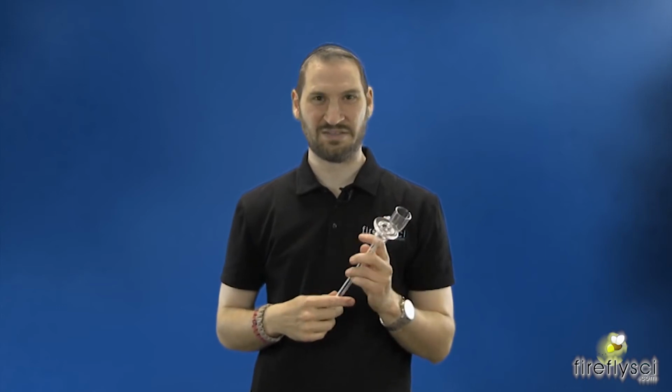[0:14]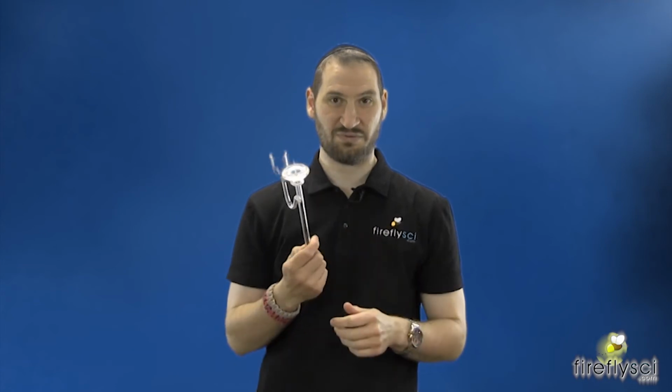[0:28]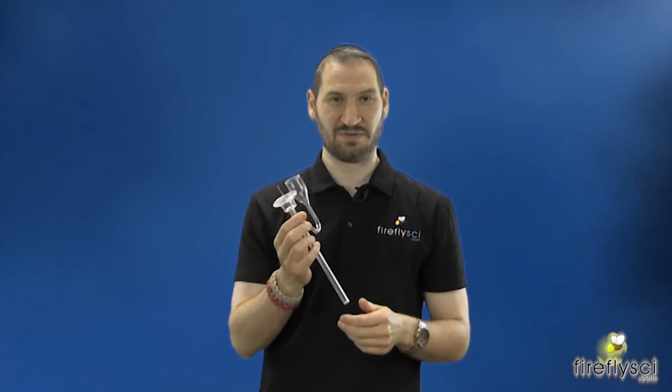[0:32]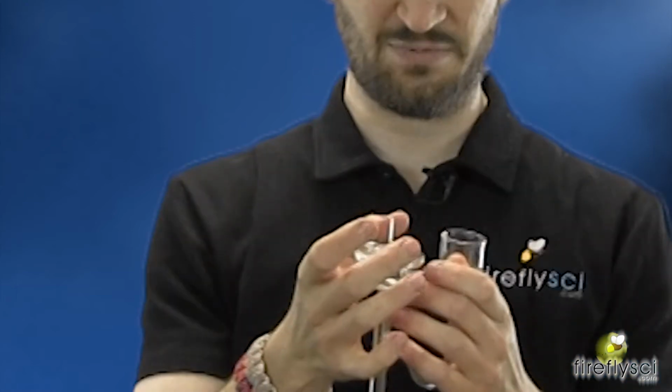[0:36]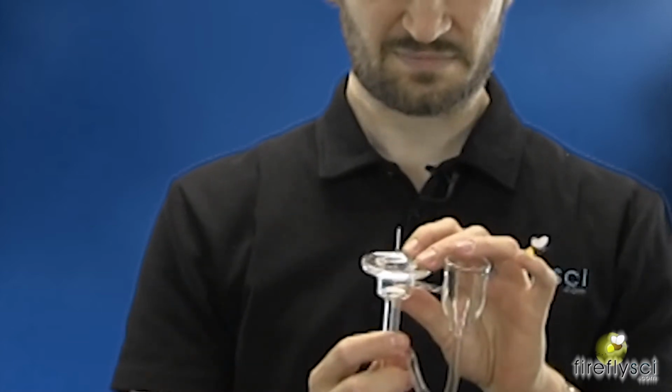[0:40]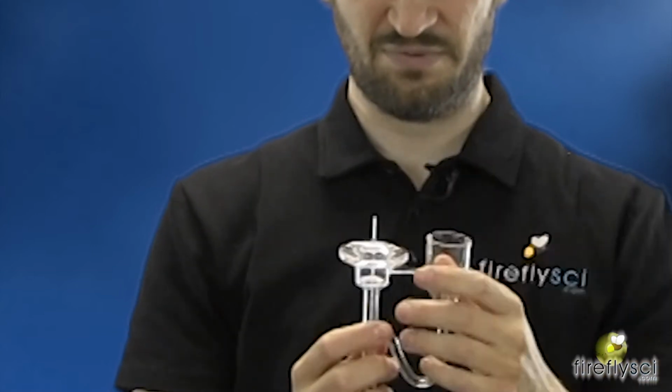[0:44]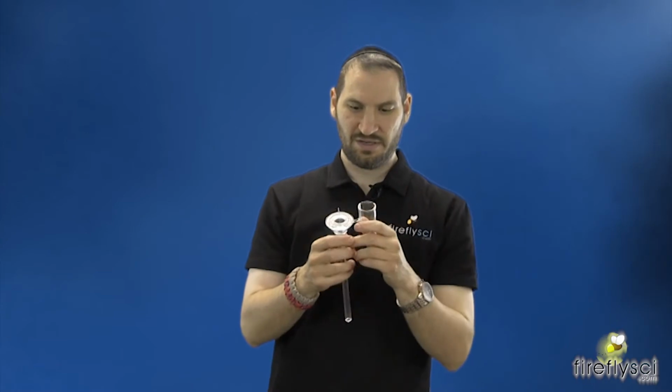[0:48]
And yeah, so he made us this, we worked together to make this prototype cell washer. And again, we designed this for large lightpath cuvettes. You could see some of the differences here is that we have this huge base now. In the current design, I should say, we have a small little cup here, but we enlarged this base and made it much larger, much bigger.
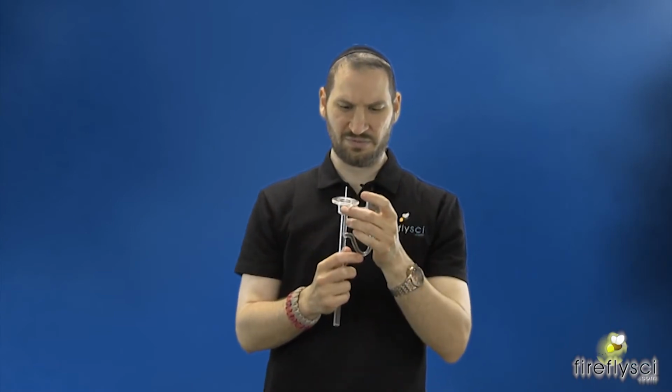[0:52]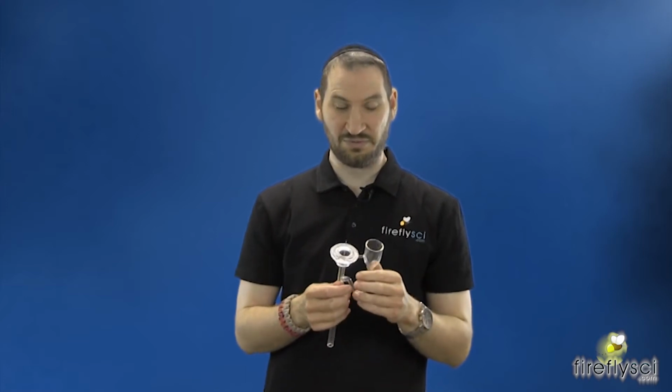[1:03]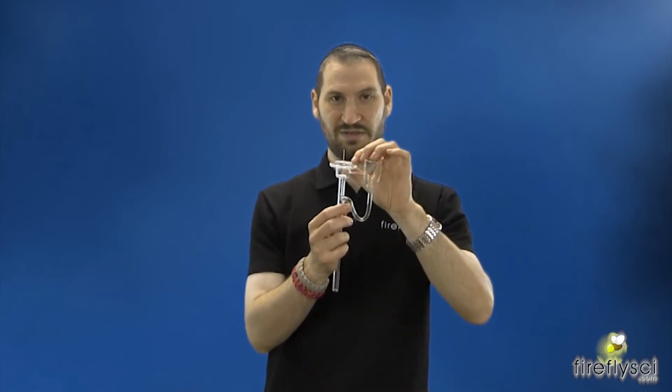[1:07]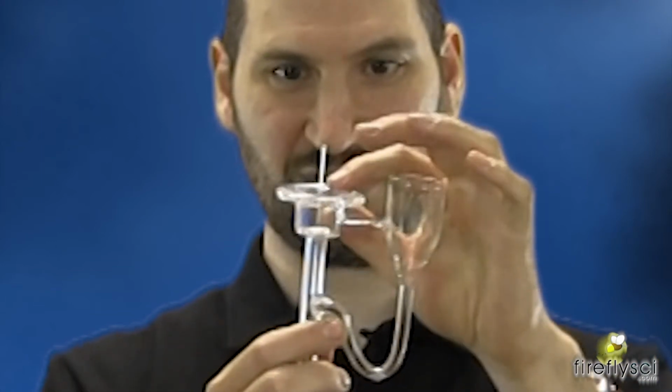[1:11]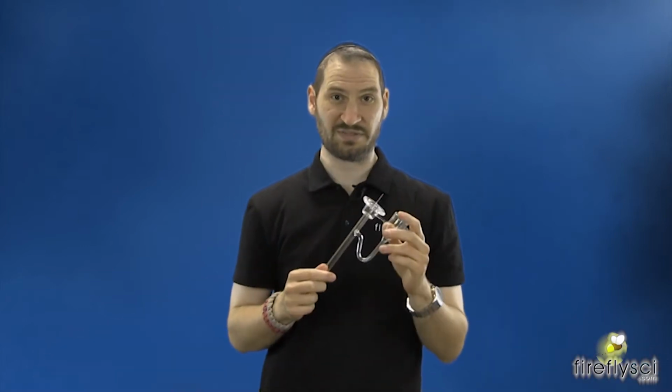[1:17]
And essentially, not only do we want this to wash large cuvettes, but we also like to wash our smaller lightpath cuvettes as well. Our goal, of course, is to wash those tiny 1 millimeter lightpath cuvettes. And what we did to accommodate that is we put a smaller tubulation here in the middle. I'm not sure if you could see that, but right here, this tube is actually smaller diameter than what we're currently using. So this again is a prototype. It's the first one that we've designed.
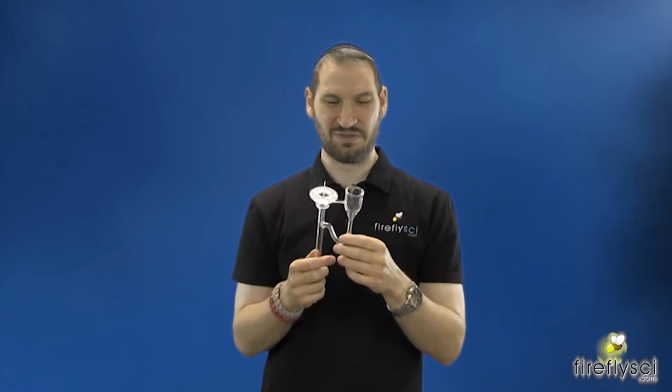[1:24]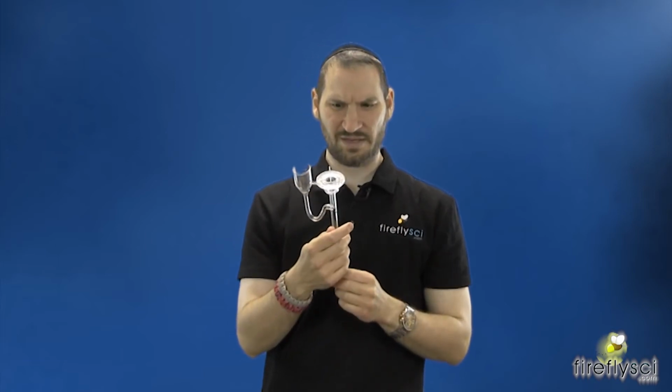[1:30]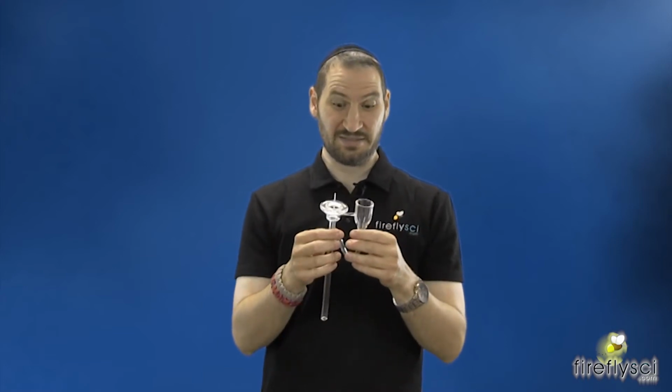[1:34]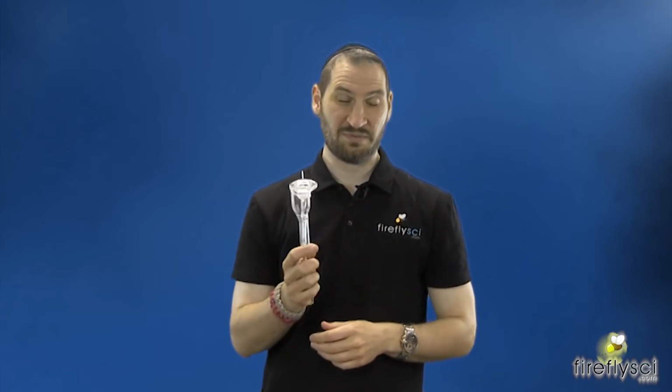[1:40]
And we're going to let you in a little bit behind the scenes here. I want to show you guys how we develop products from start to finish. And again, this is just the first run of this. And I'm going to be testing it today. And that's why I'm showing it to you. To see, does it work? How well does it work? Where can we make changes? Where can we make improvements? And yeah, so I'm going to get it hooked up, set up, and let's see how it goes.
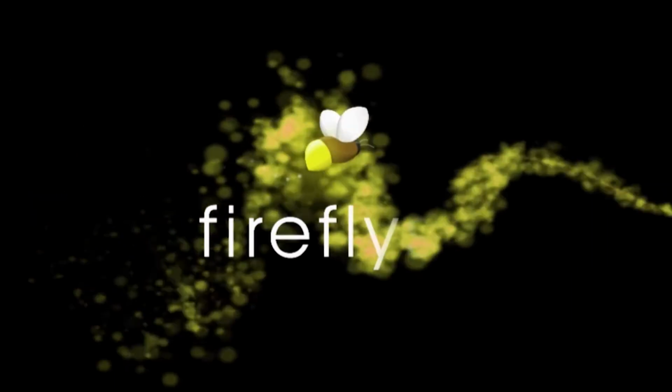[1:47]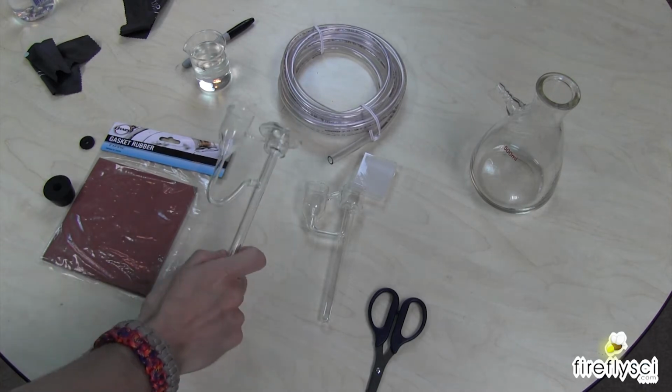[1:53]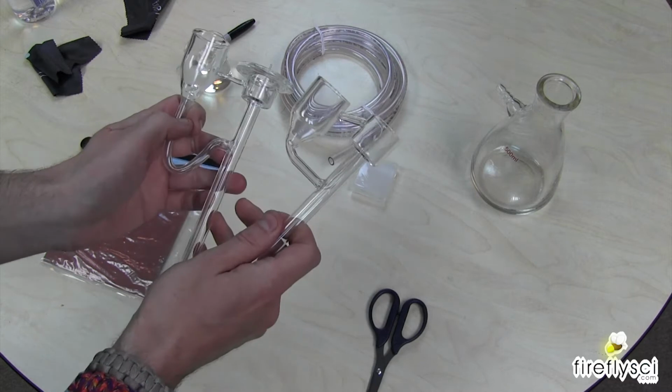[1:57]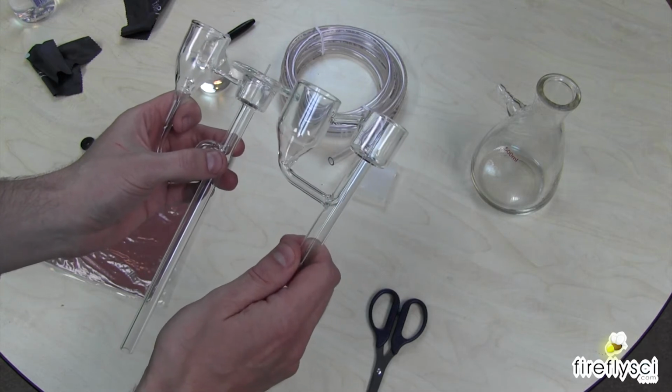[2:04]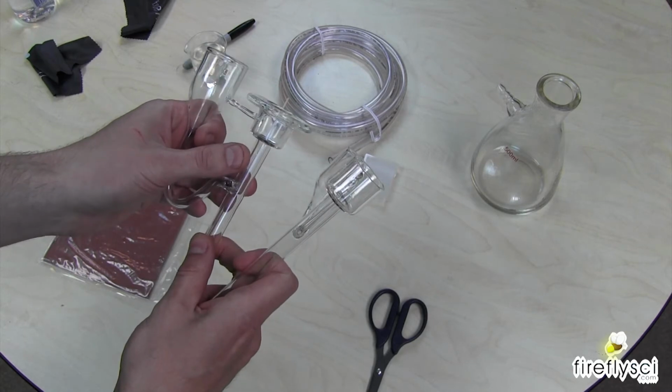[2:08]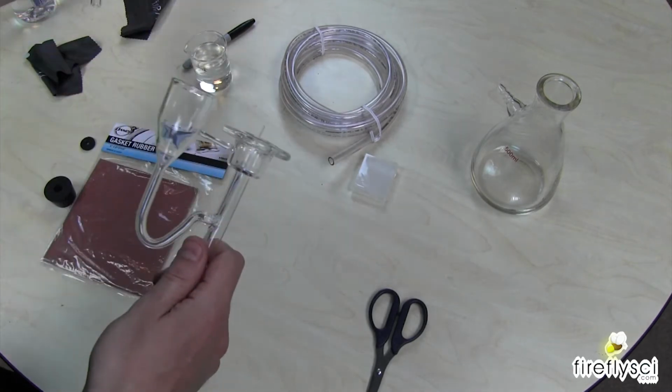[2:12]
Alrighty, so here we are. The first thing I want to do is set up the new cuvette washer here. And I brought out an old one as well so we can compare the two. This is the one that currently washes 10 millimeter cuvettes, and this is the experimental prototype for the larger lightpath cuvettes. So anyway, let's put that off to the side.
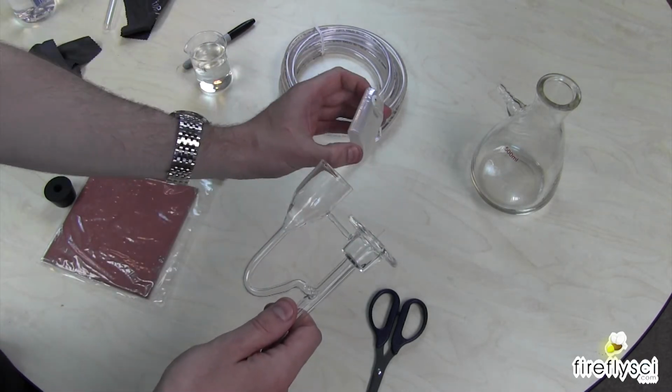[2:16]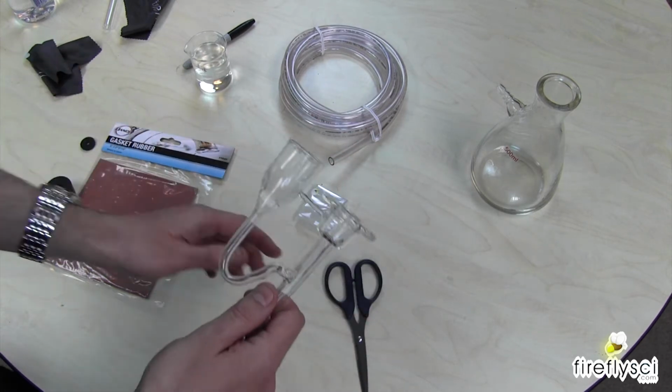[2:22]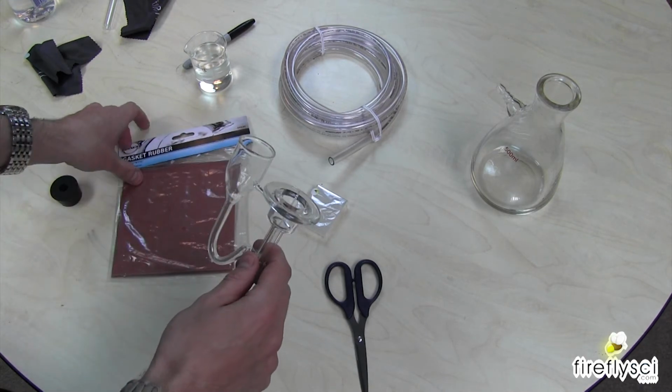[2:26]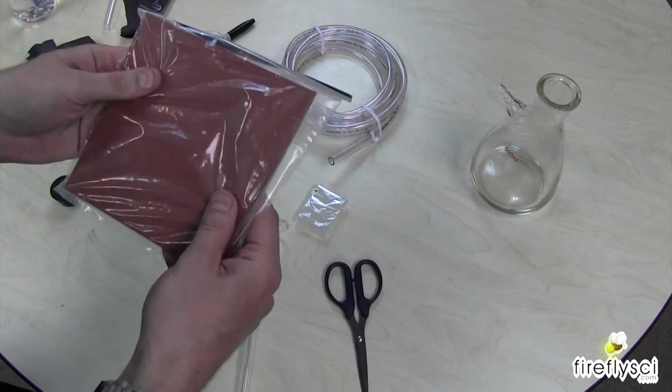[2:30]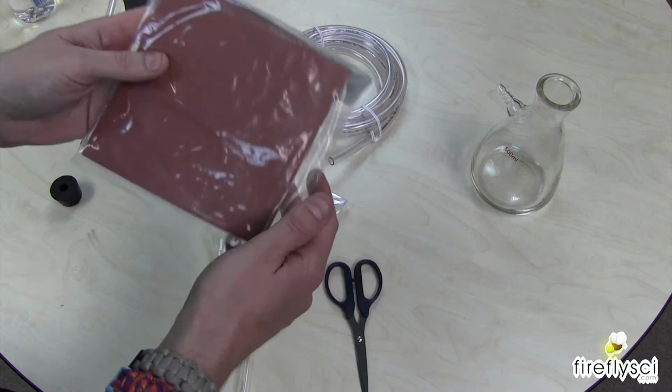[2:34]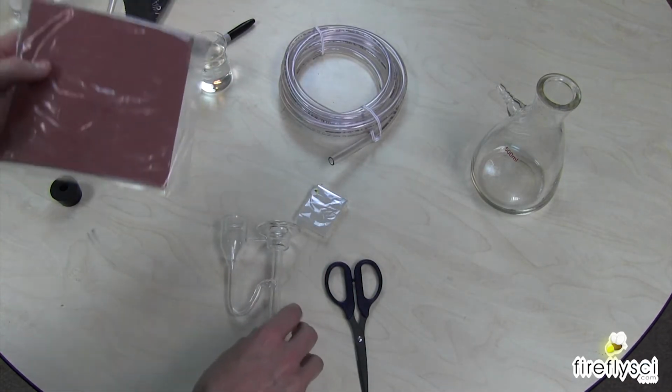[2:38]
So I have a 50 millimeter cuvette, which is going to be our test cuvette for this experiment. I didn't look for a gasket for this yet, but what I did is I was at Home Depot this morning and I picked up this big sheet of rubber here. So I am just going to cut this into a nice round shape that's going to fit right on the top of this here.
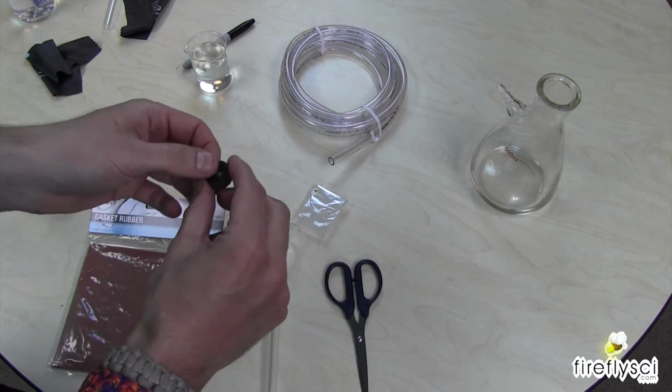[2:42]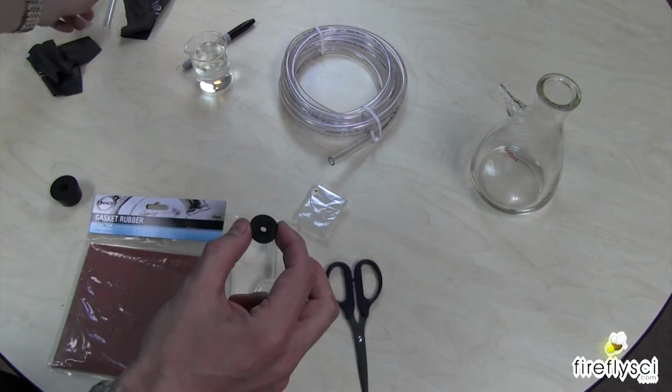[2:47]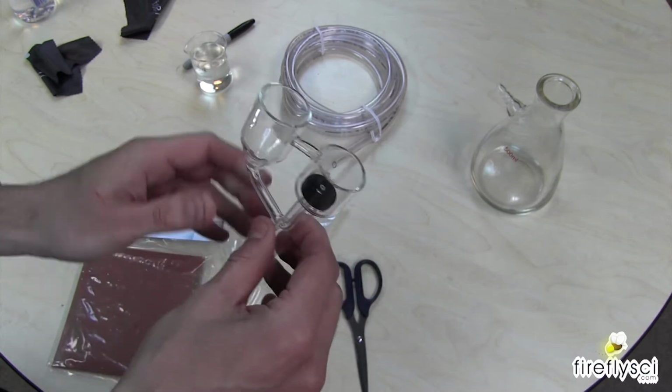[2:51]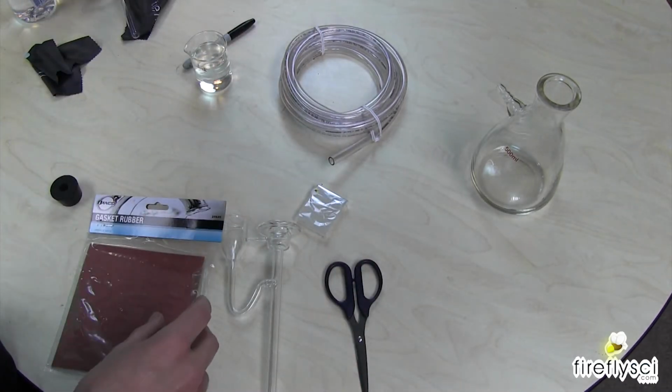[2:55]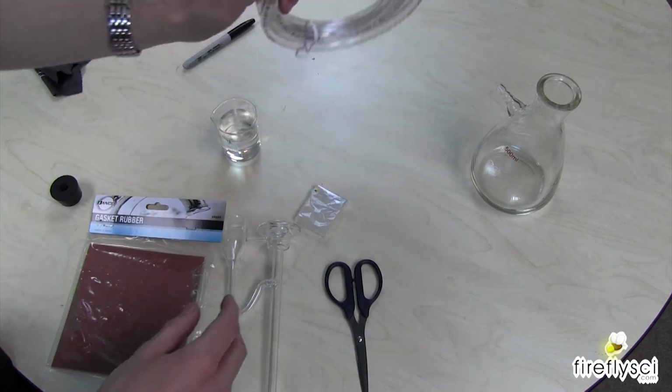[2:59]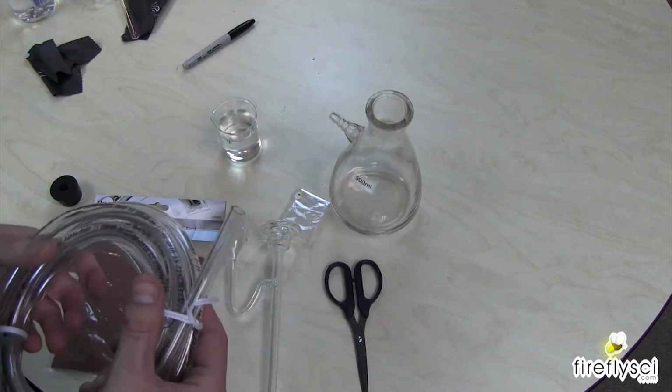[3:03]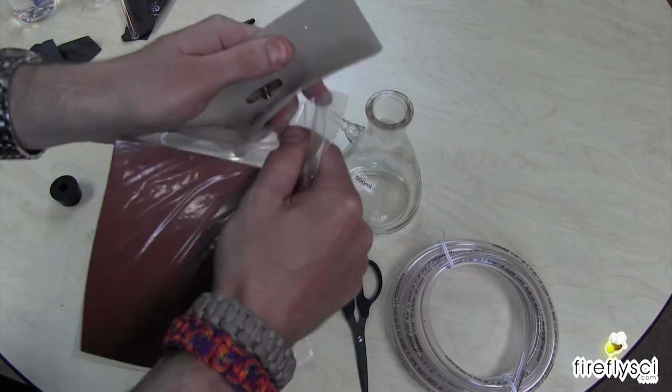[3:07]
The stopper for the other one looks like this. It's the small little disc here. And again, everyone's seeing that, it just sits right on top. Oh, there we go. Sits right on top just like that. Okay, fine. I have some distilled water here, the tubing for the pump, and the vacuum flask is hanging out over there. All right, good.
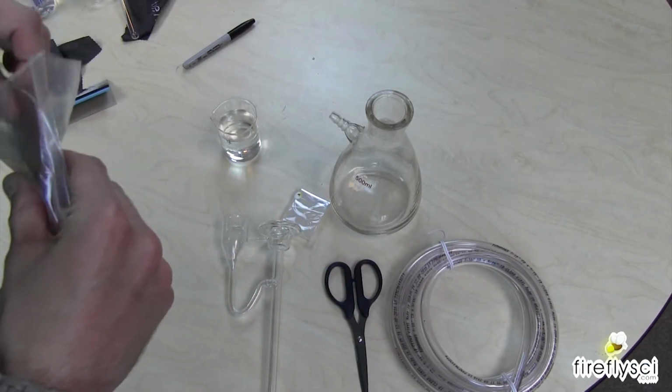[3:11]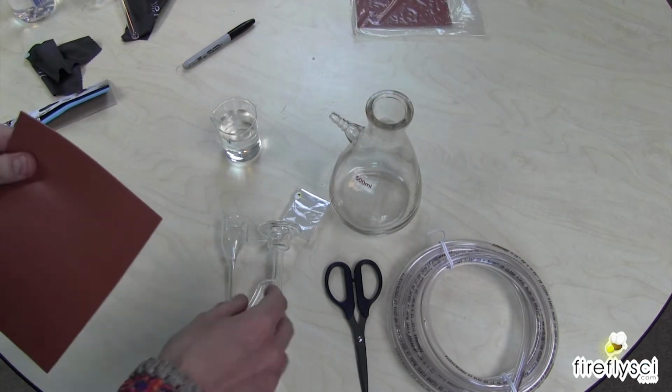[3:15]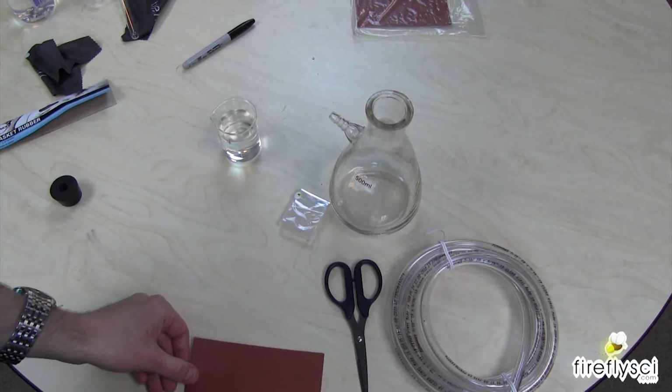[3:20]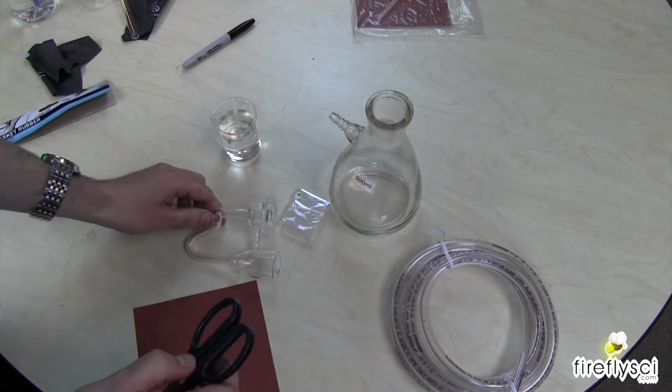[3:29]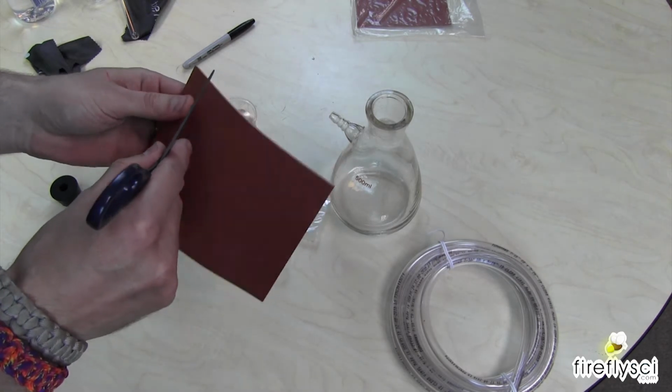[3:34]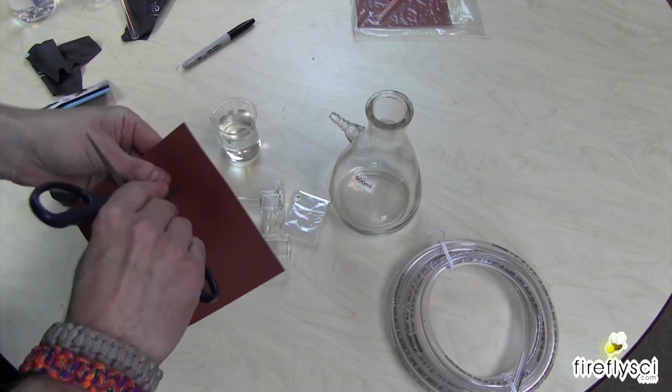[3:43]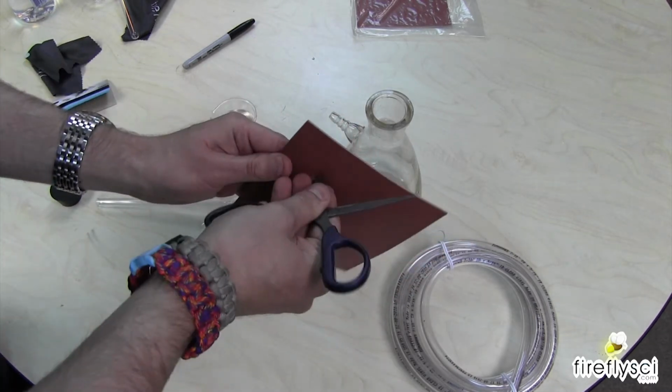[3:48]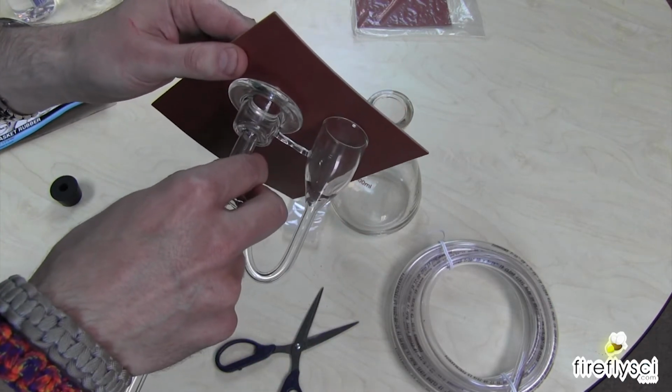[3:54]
So let's go ahead and start with making our gasket. All right, so the question is, how am I going to pull this off now? I want to be able to make a hole in this. So let's see. I think the first thing I'm going to do is poke a hole here somewhere in this region and hope that this will be able to let me trace out the design here. Okay, cool. Nice. Get out of the way, rubber.
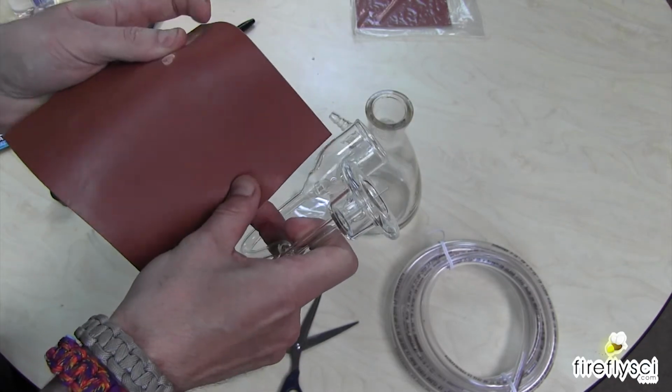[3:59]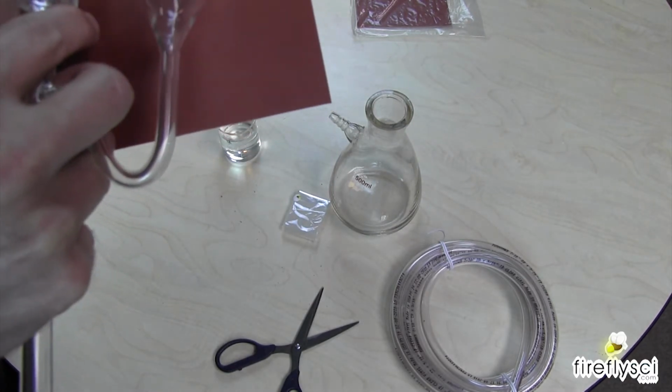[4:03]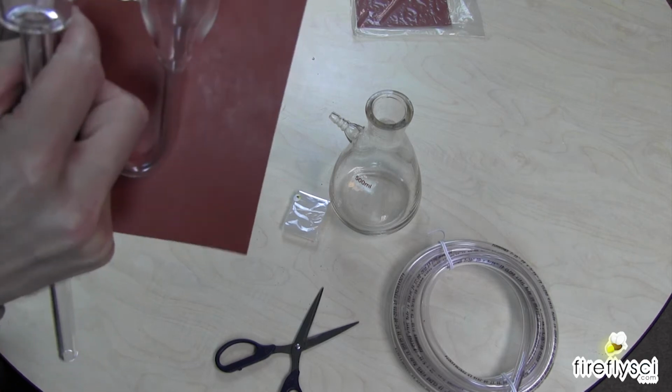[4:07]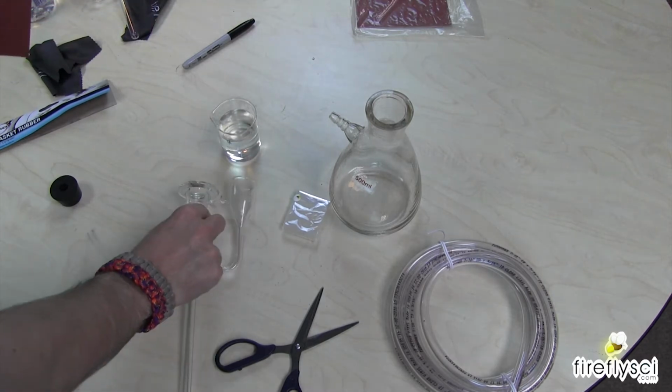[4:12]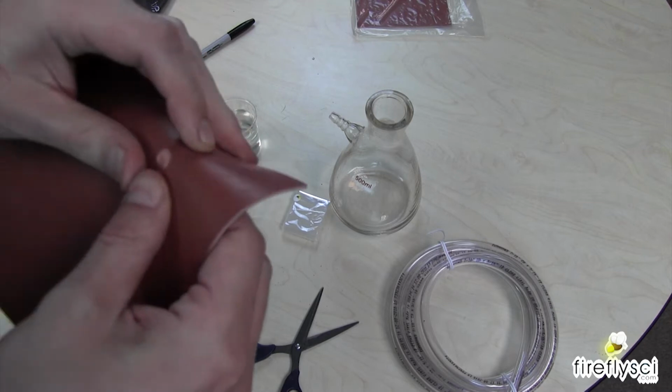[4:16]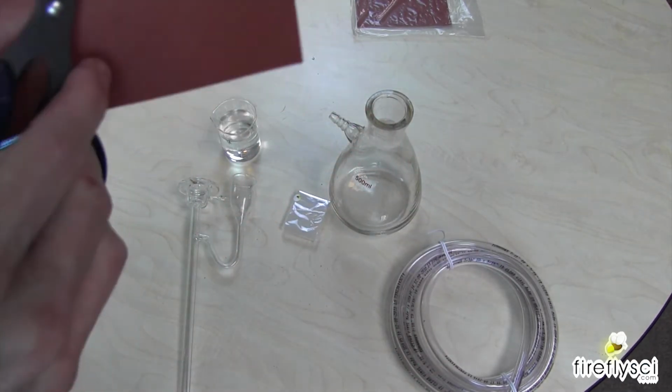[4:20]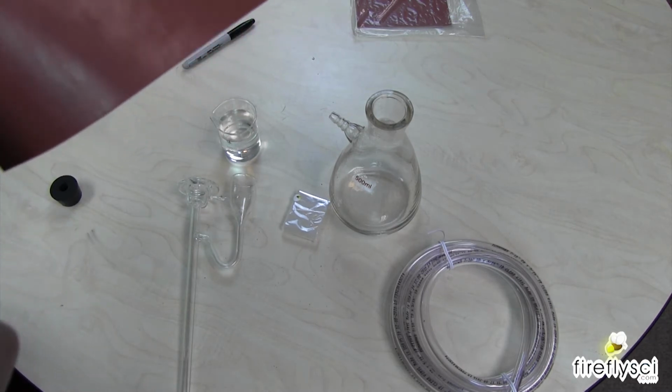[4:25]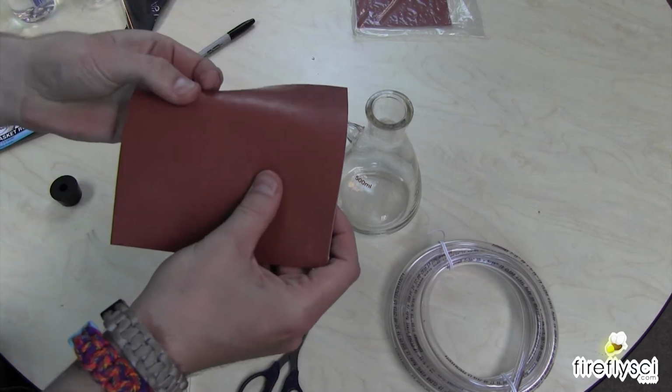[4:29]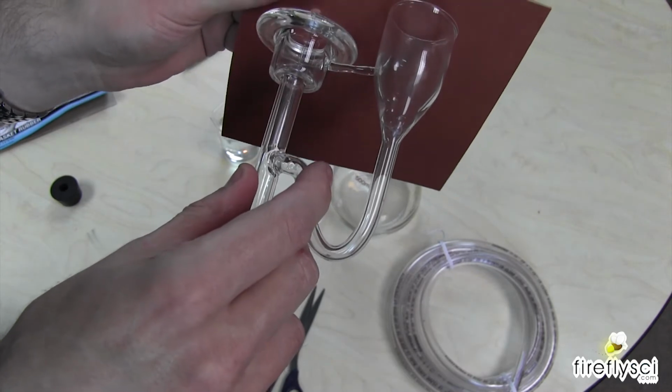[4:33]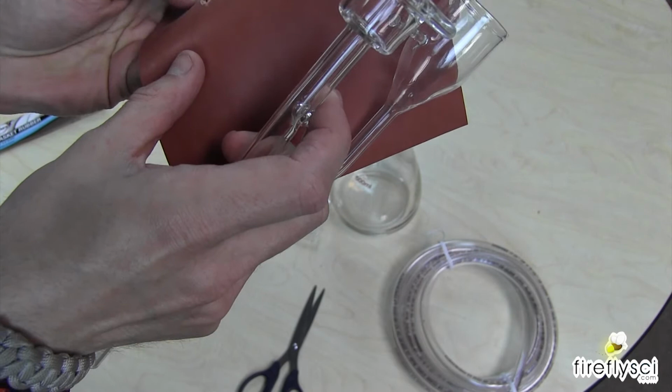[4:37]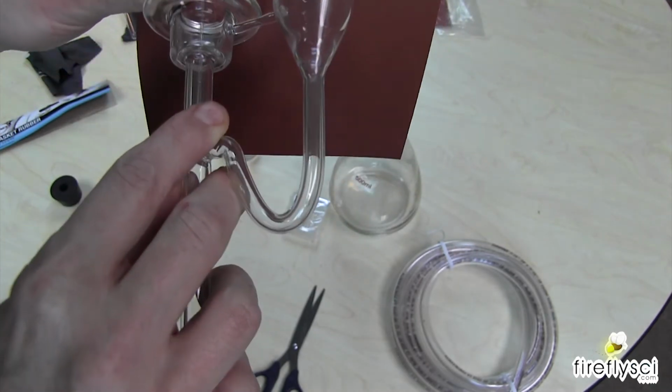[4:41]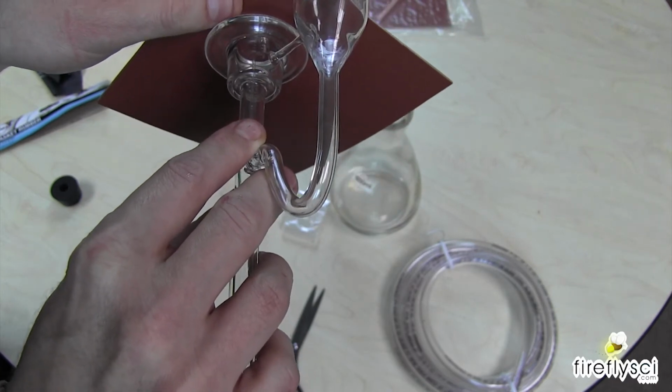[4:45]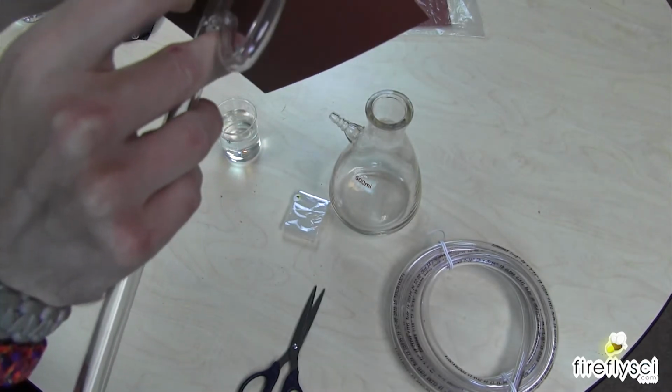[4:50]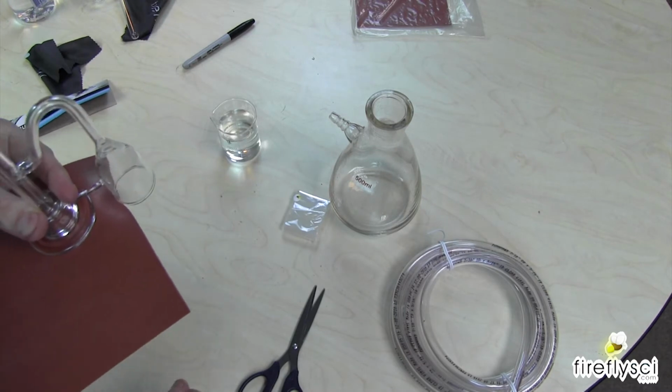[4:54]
Okay, now that I have a little bit of the rubber removed, I'm just going to pop this through this little hole I made here. Trying oh so carefully not to snap off this very delicate tube. All right, nice, got it. All right, so I'm just going to flip this over, trace this, cut this, and then we will be in business. Where's my marker?
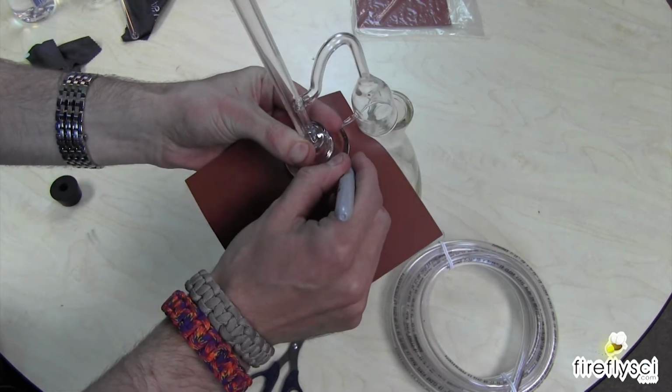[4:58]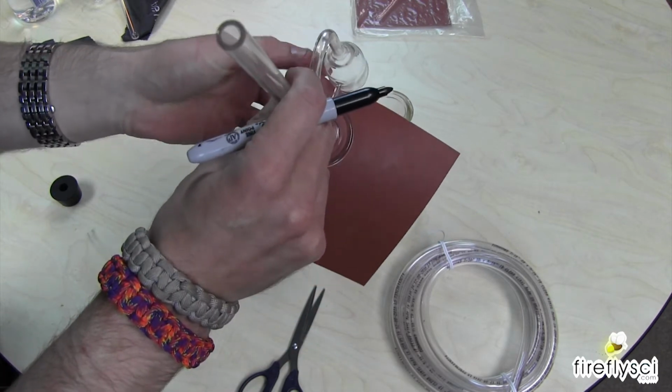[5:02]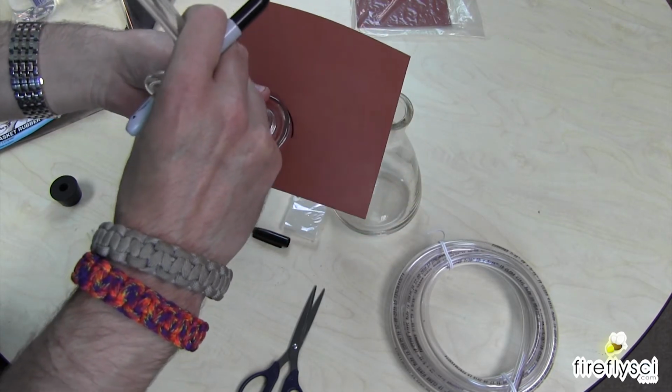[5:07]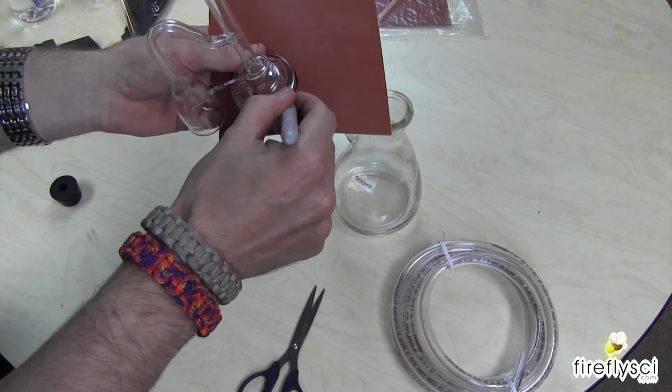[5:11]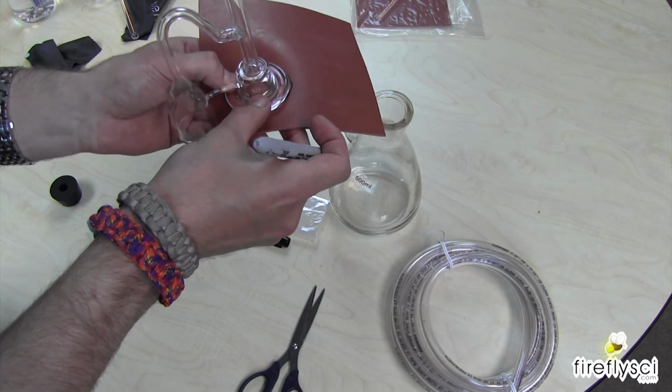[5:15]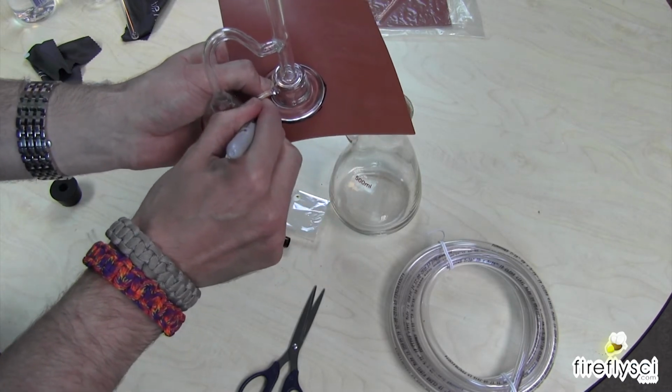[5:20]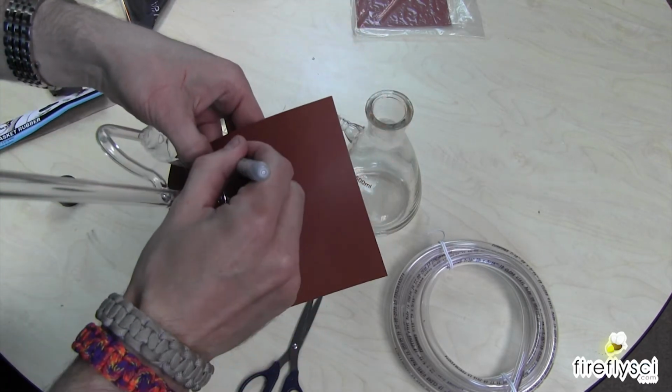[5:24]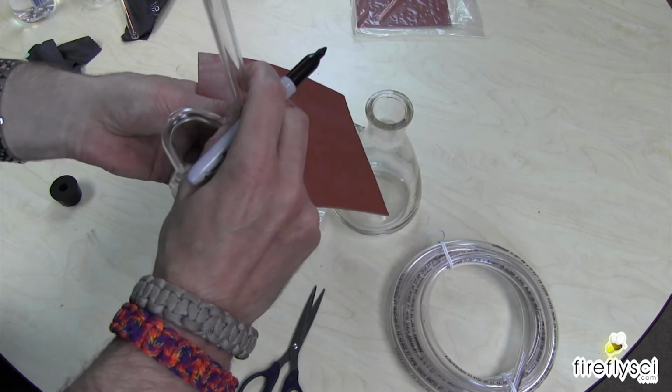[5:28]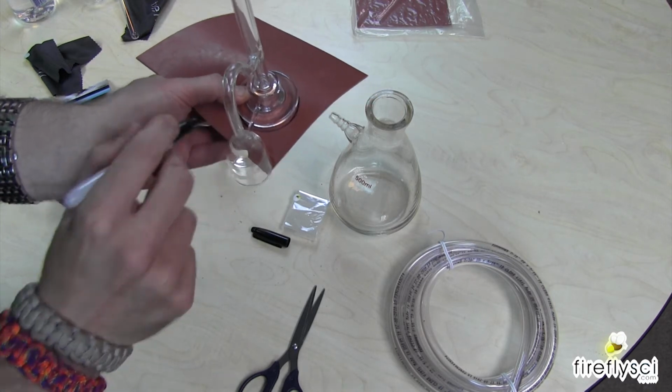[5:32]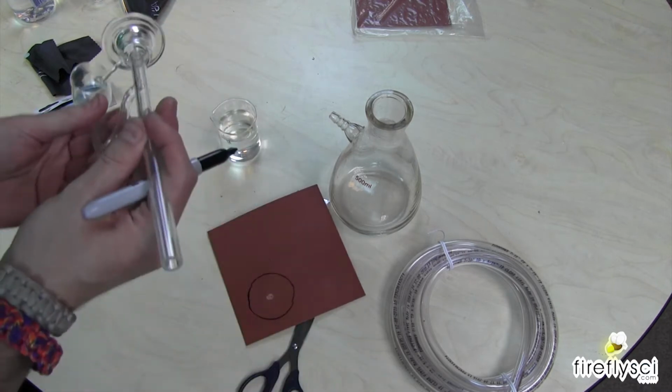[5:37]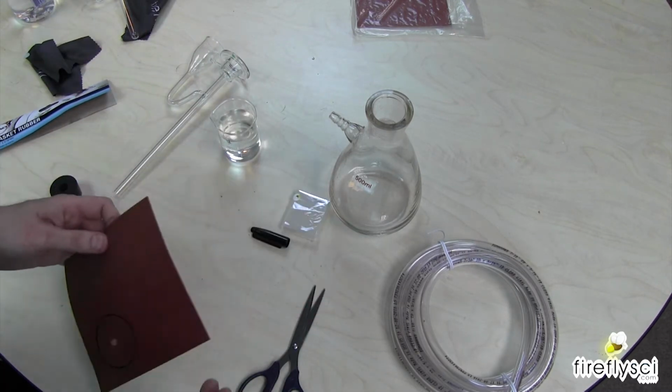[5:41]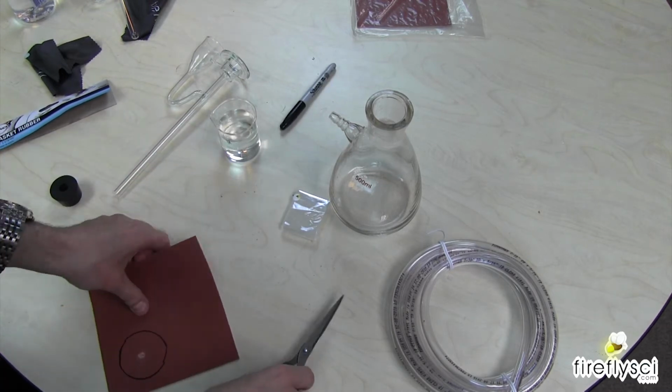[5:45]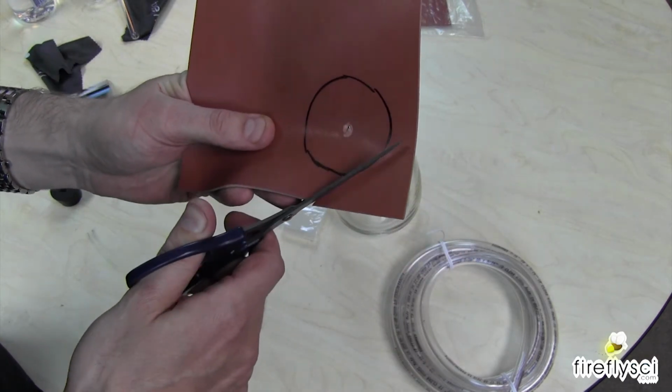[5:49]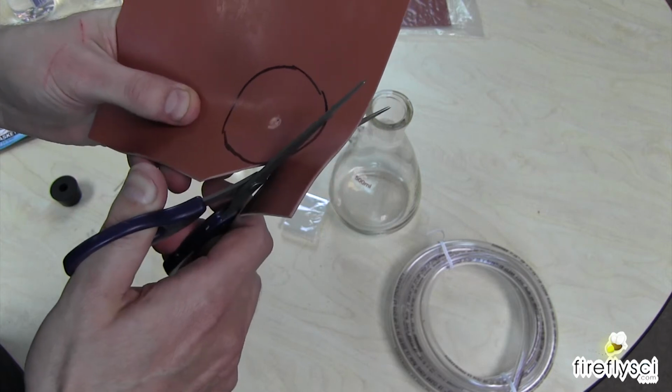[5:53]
Again, I'm not looking to make this into a masterpiece, just something that will work. There we go. Okay, fine. Boom. All right, it's not great, but you know what? It'll do. Where did I put the cap for that? There we go. Always helps to keep your tools in some kind of order so you can find them when you need them. All right, so I'm just going to go ahead and cut out this circle. Yes, I'm wasting some of this material, but there's nothing I can do about it right now.
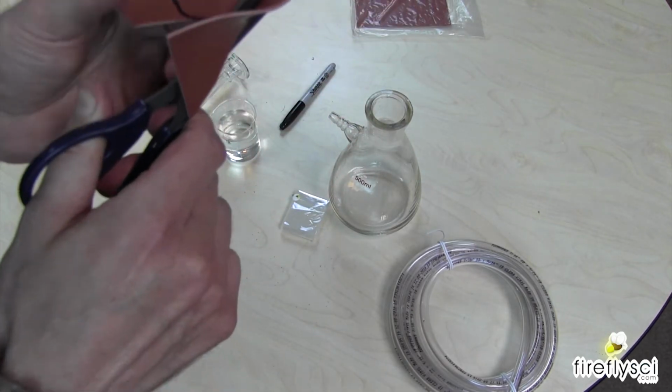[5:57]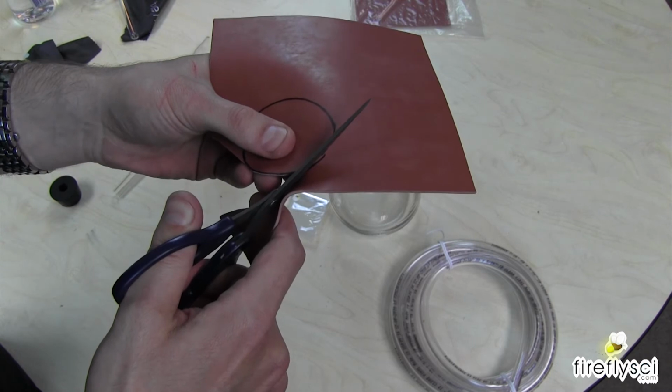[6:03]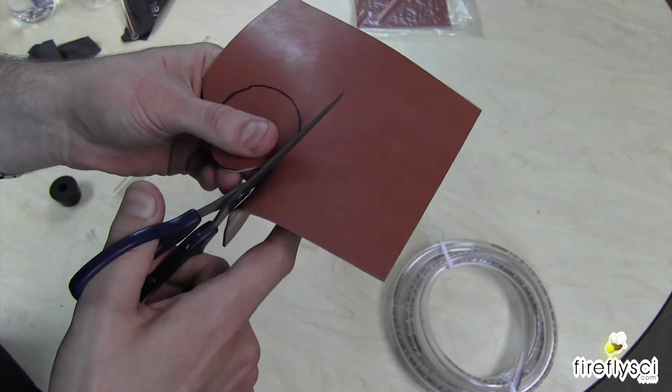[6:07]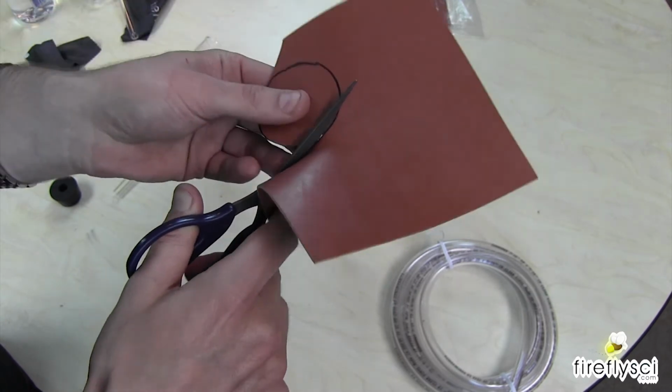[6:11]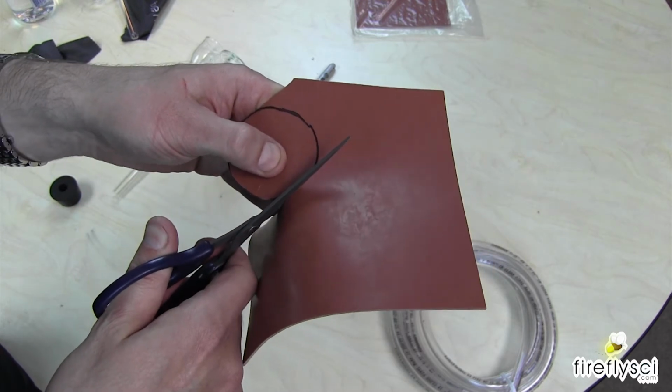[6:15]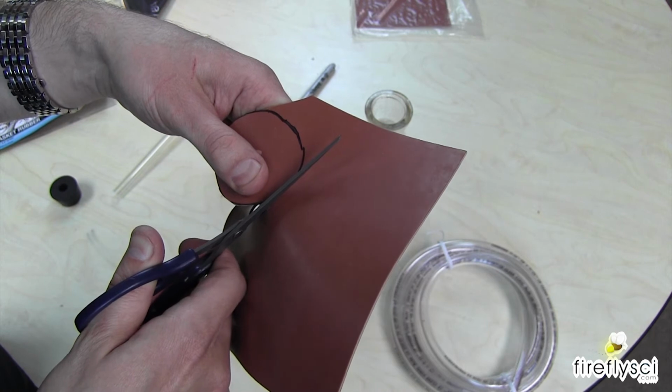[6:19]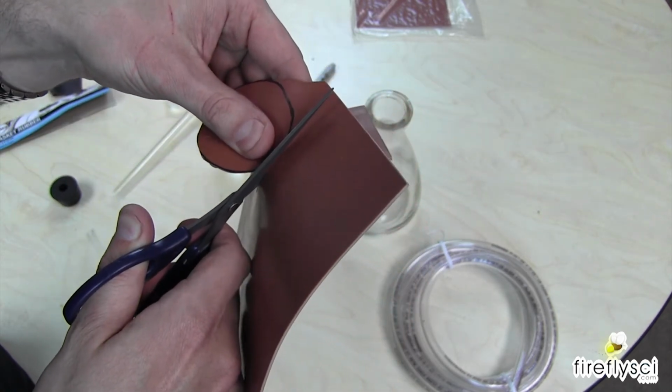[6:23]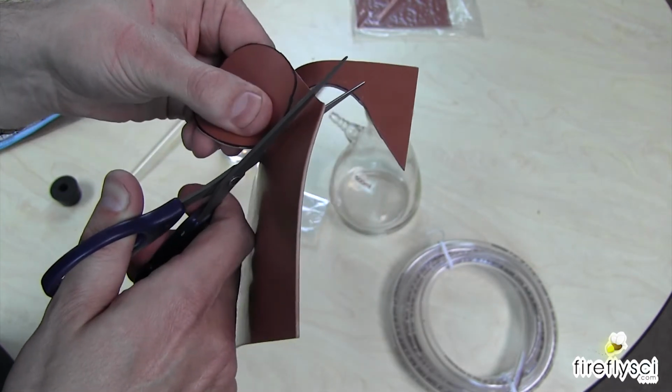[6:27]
Love cutting out stuff. It reminds me of when I was a kid. I always got to cut on the line, right? I'm doing a really crappy job right now doing this, but you know, just for demo and whatever.
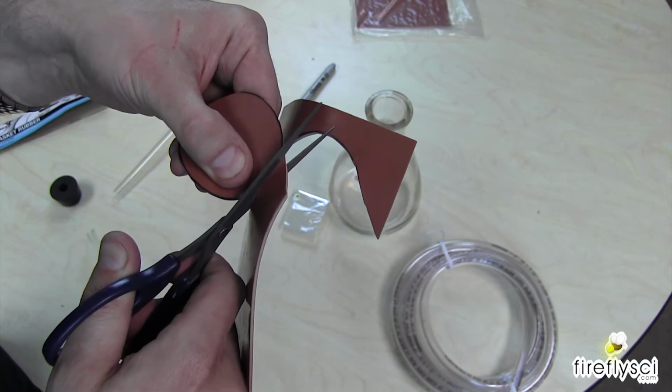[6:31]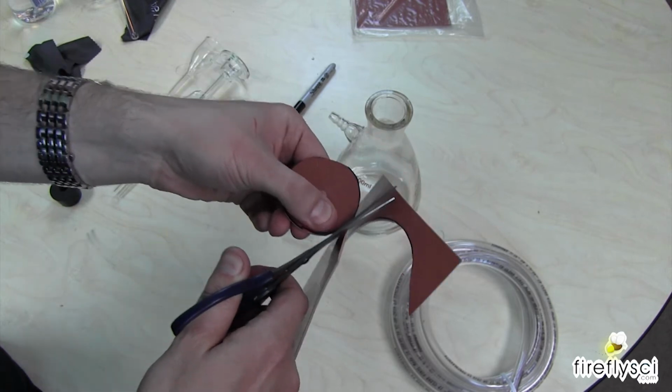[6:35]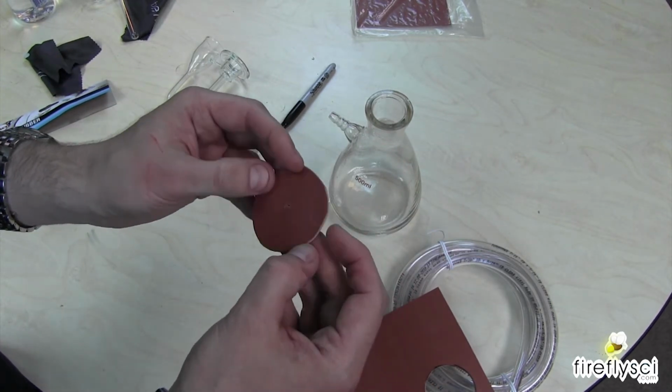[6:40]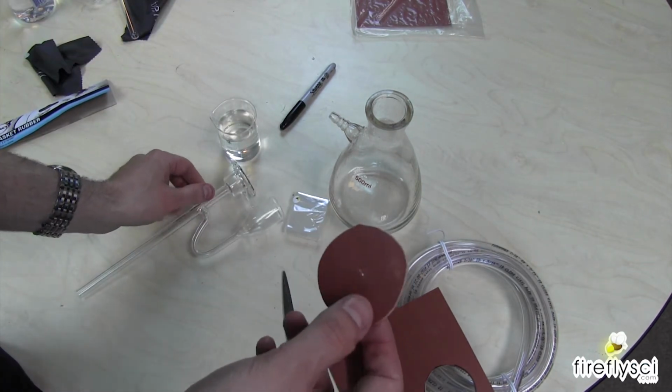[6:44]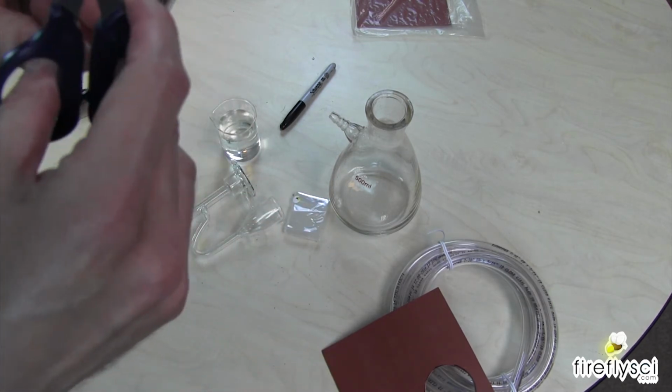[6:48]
All right, there we go. All right, that doesn't look like total garbage. This will do. You know what? I do want to make this hole in the middle bigger, so I'm going to do a little bit more cutting work on that.
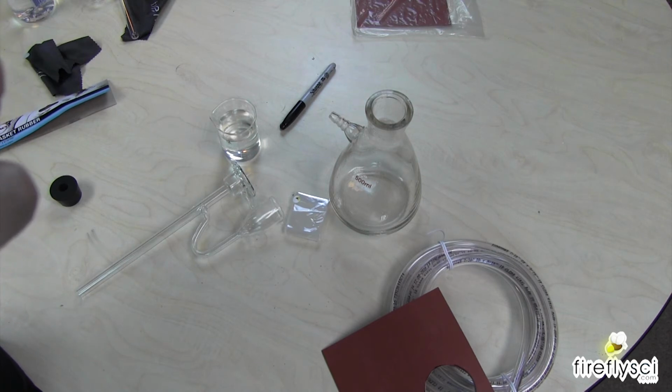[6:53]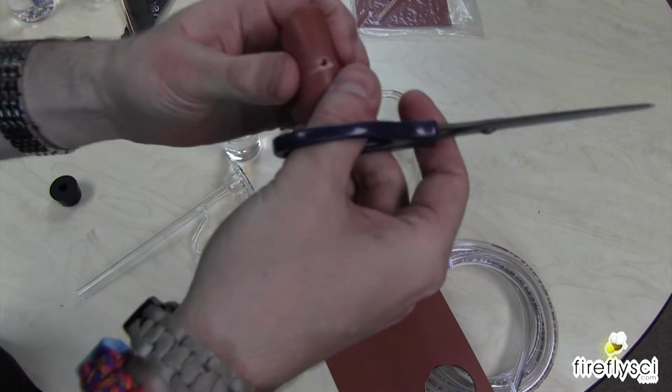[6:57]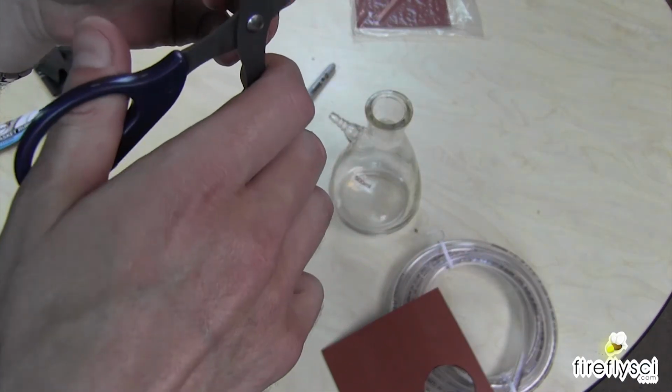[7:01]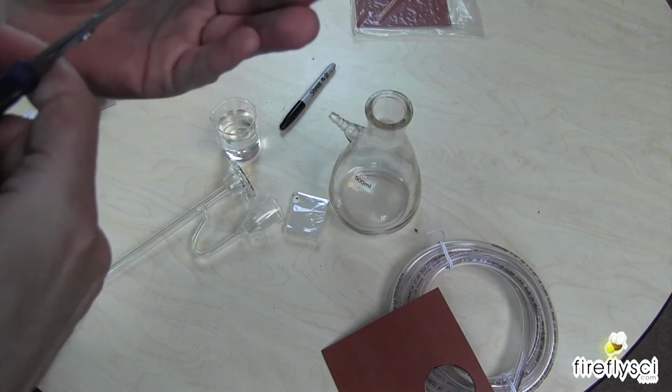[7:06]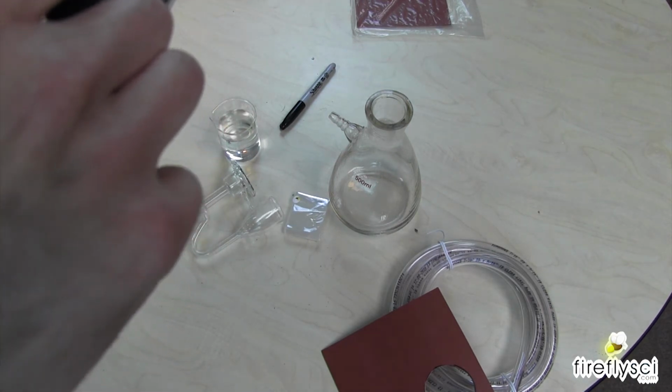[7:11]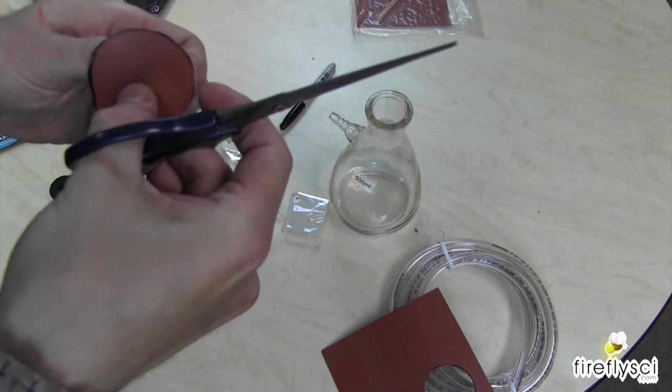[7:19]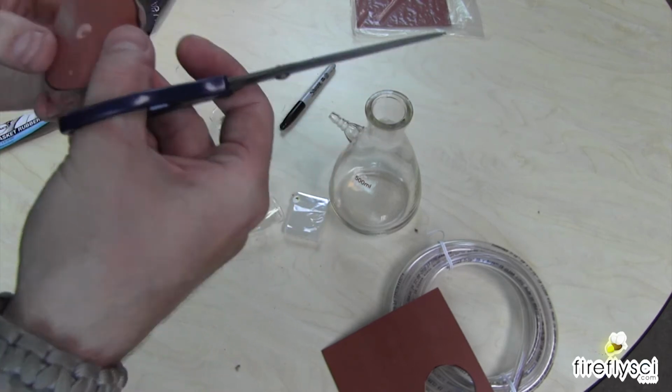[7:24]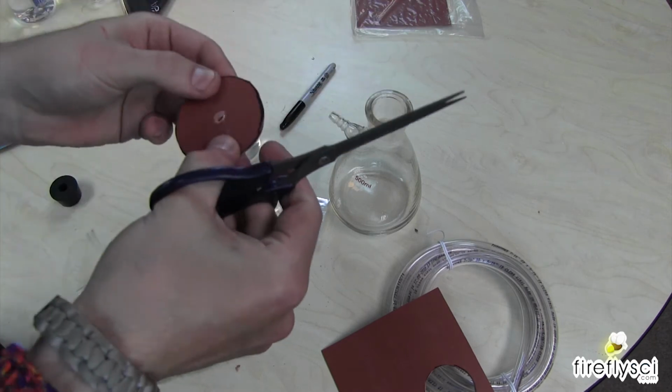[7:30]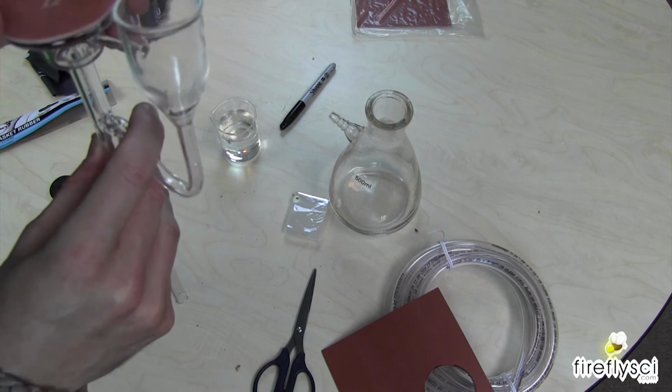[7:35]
Let's make it a tiny bit bigger, because this is where our solution is going to be draining through. So let's see if we can just get it a little bit bigger without making it too big. That out, boom. All right, we'll see if that's good enough. All right, so there's that.
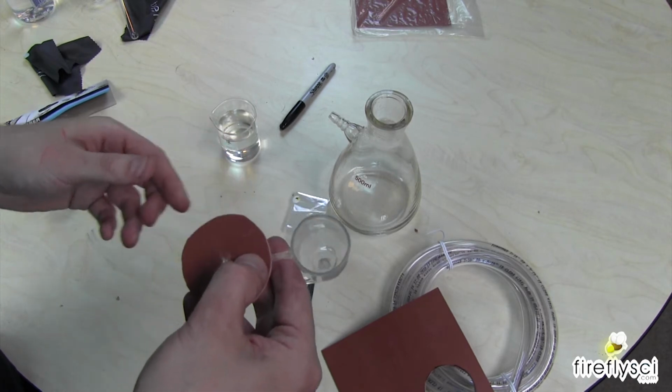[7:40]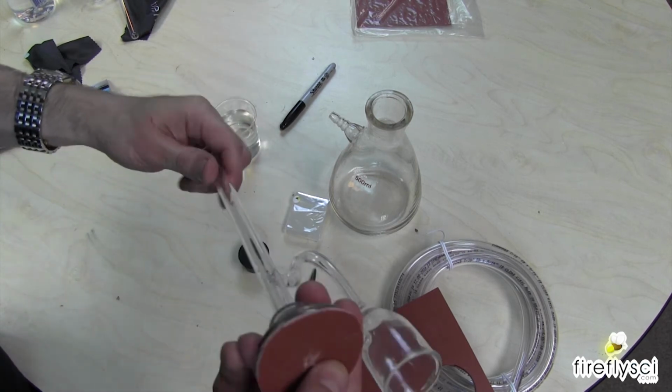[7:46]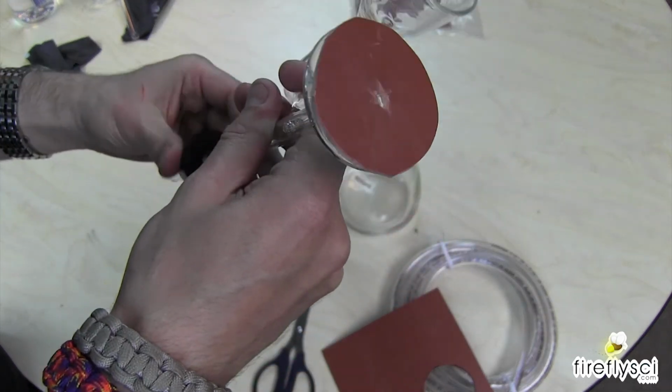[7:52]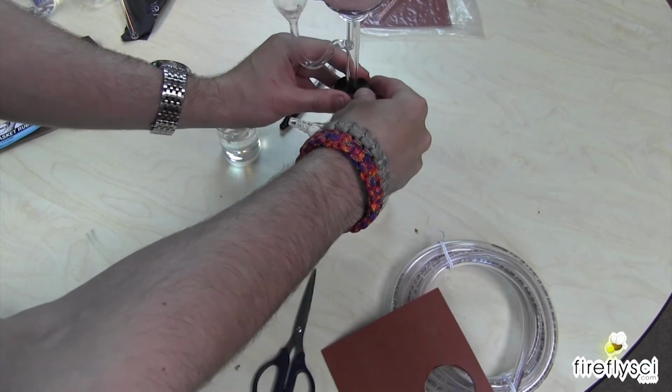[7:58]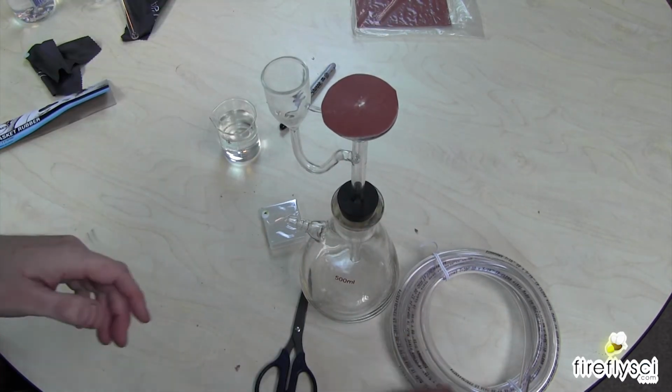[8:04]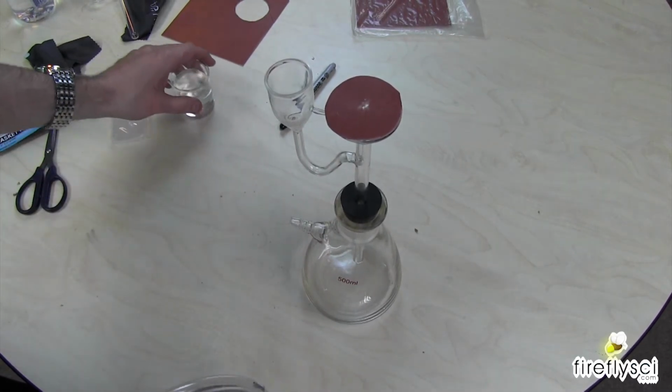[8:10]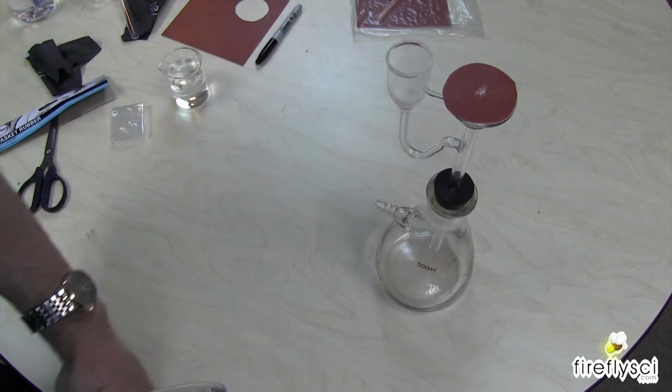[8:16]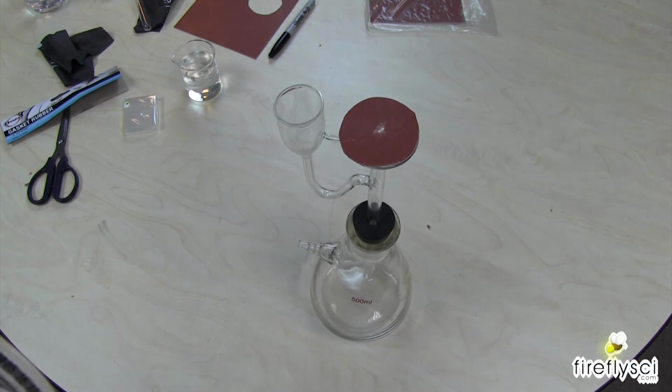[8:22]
Let's put on the stopper here. Number 7 stopper again, just put a little bit of water on the bottom of the tube here. And it pops right on. I'm bringing it into the frame so you can see what I'm doing. It'd be helpful. All right, just gonna clean up this area real quick. Don't mind me. All right, nice. All right, so there it is. Looks pretty good.
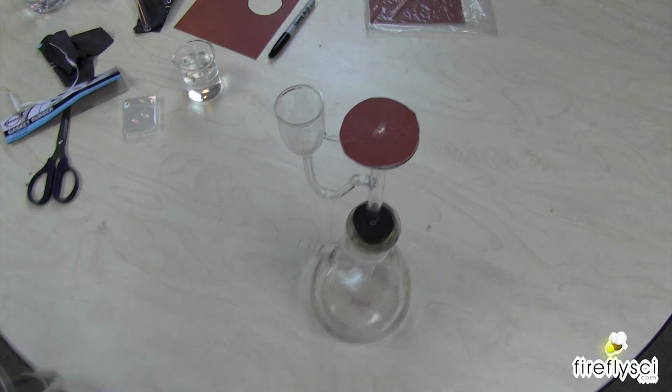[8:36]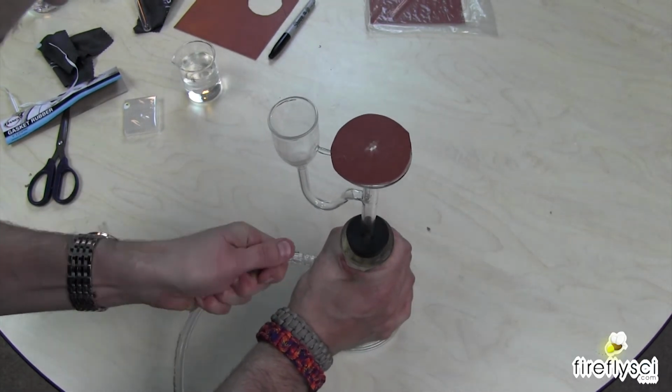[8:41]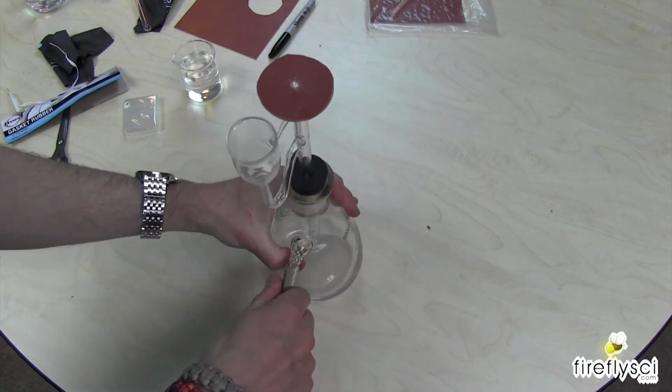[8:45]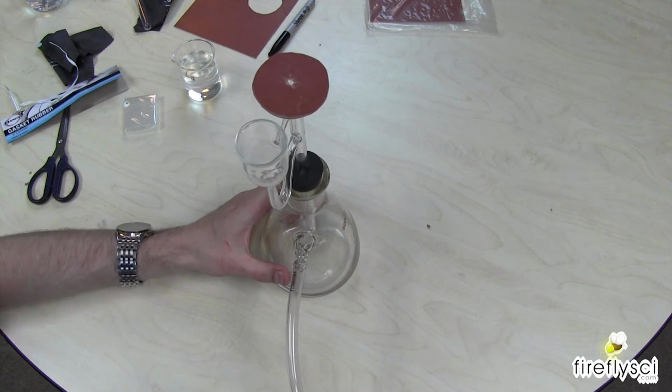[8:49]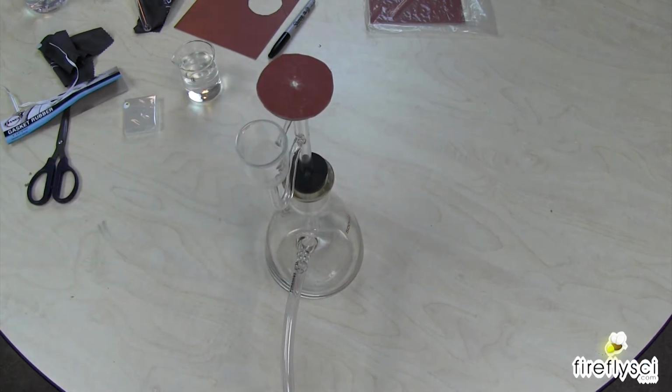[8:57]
I'm going to hook up the tubing now. All you do is press it onto those connectors there on the end, and that's it. Okay, that's going to work for us. Let me just see which one I need to do for the vacuum line. Okay, it's this one. Tube on the left is for the vacuum. Oh, baby, this is tight. Okay.
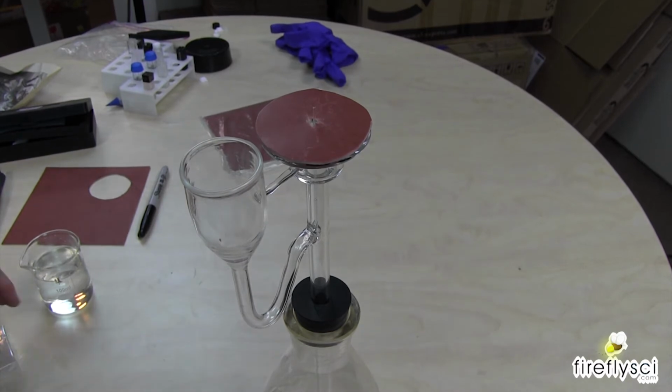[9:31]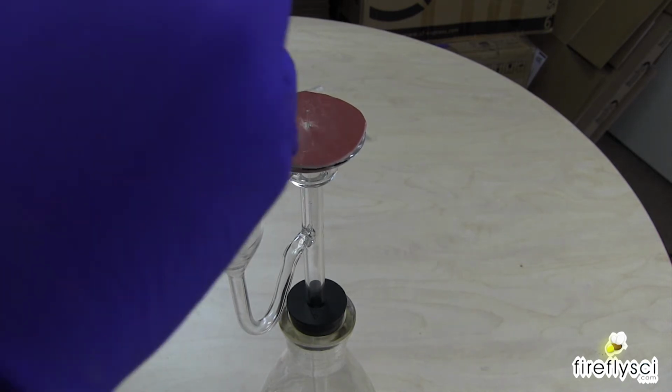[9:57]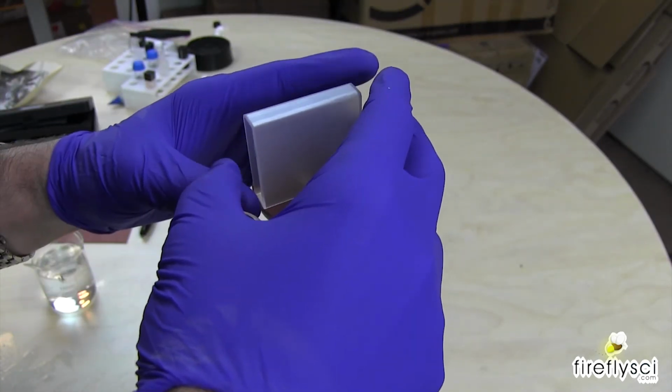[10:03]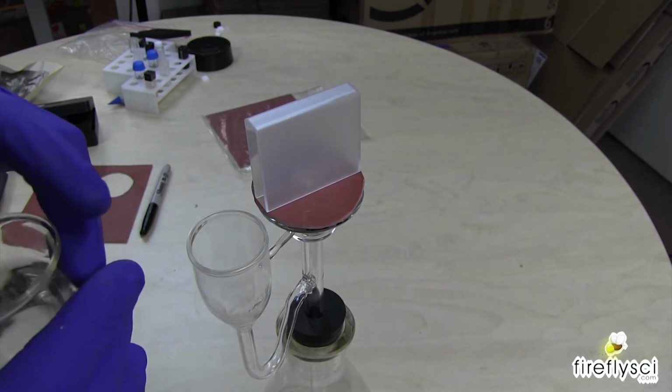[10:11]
Alrighty, so here it is. Let's try this bad boy out and see how it goes. I probably should use gloves, shouldn't I, for this? Let me get these gloves on here. Alright, let's see. All right, so this, whoa, baby. That's one thing we're gonna have to talk about, is that tube. But will it work? Let's put in some water here and find out.
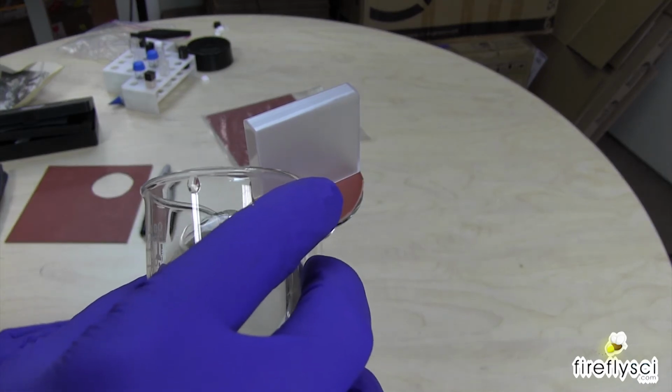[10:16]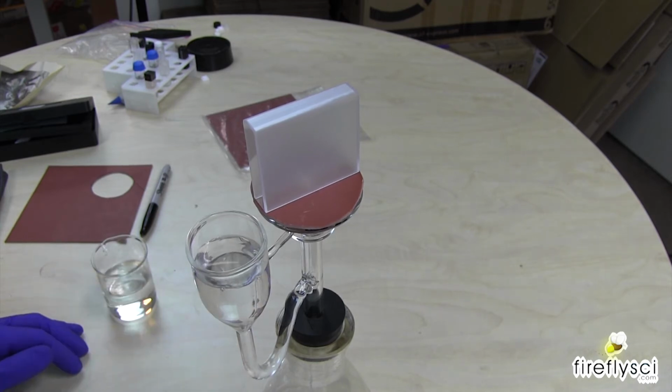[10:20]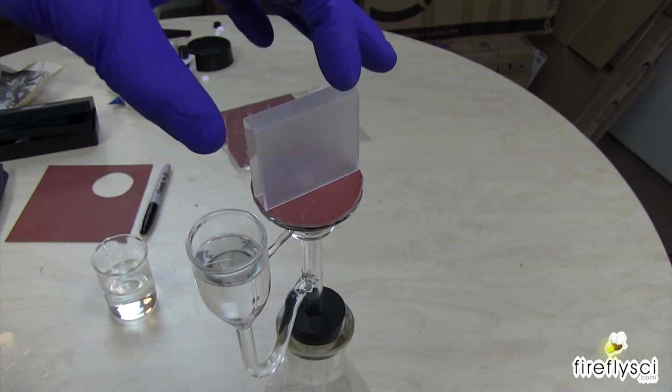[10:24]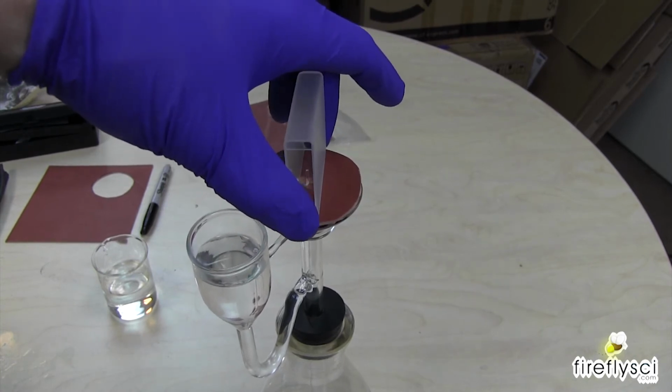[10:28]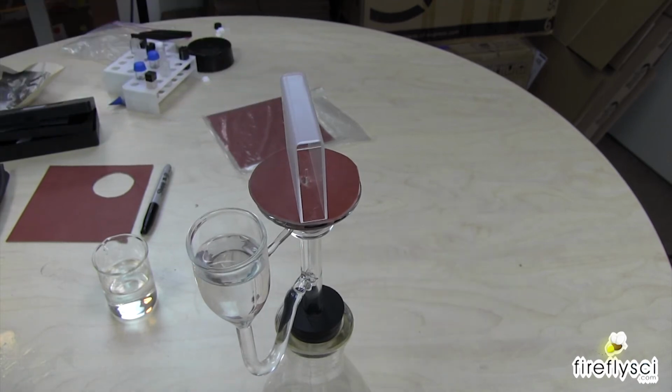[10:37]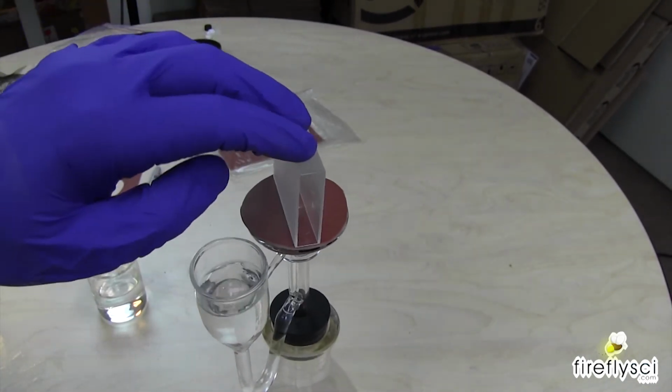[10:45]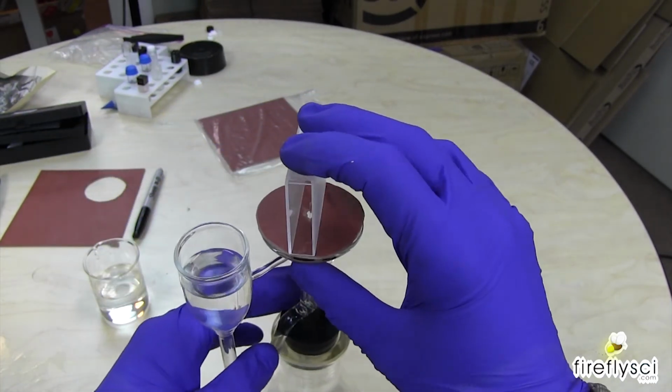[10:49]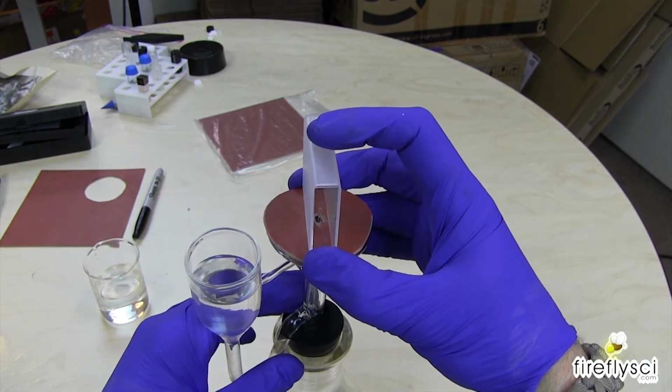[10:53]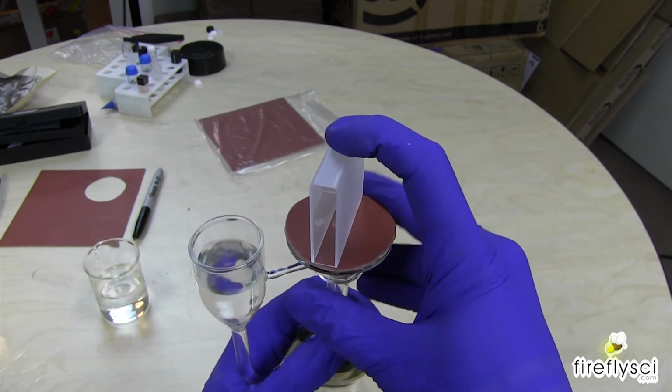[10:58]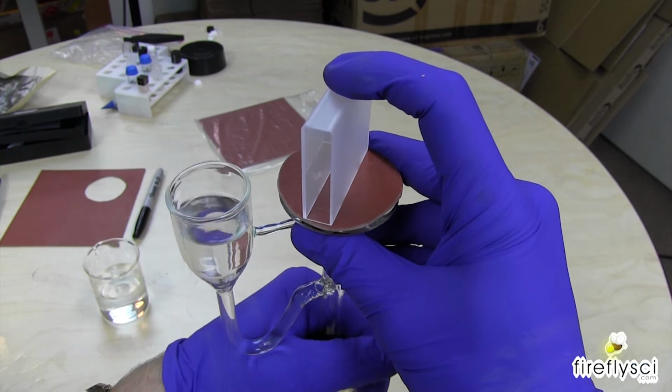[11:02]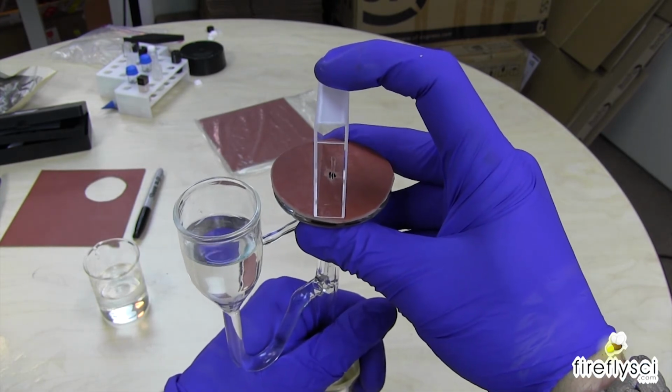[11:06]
Now that's interesting. I'm just going to turn this out so we can actually see if it's going to work and if the water is going to blast up in there. Is that a good angle? Yeah, that's nice. That'll do. Alrighty, I'm going to plug in the pump. And we have, oh man, there's nothing going on here. And what is the problem with this bad boy here? Because I'm not getting any water pressure right now.
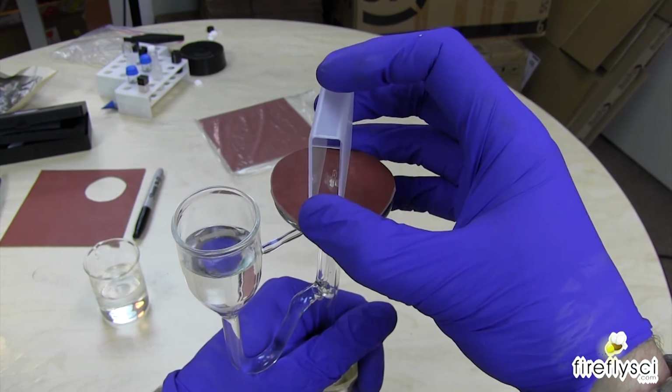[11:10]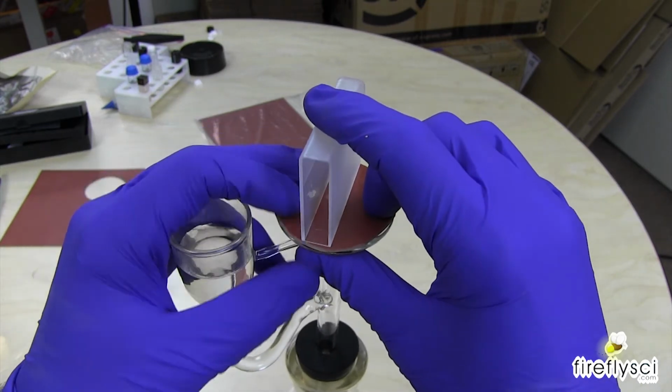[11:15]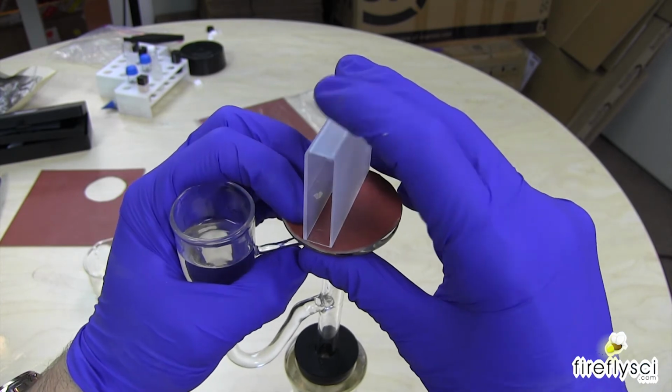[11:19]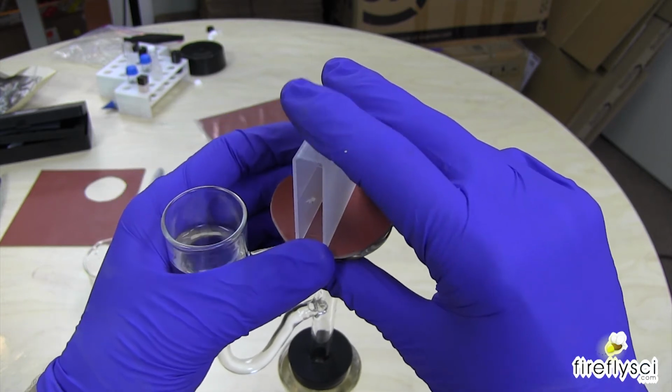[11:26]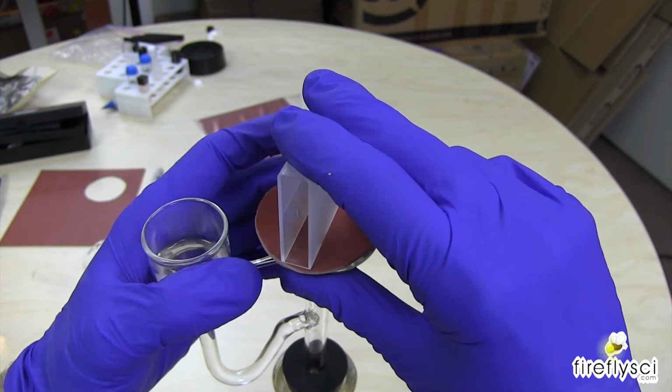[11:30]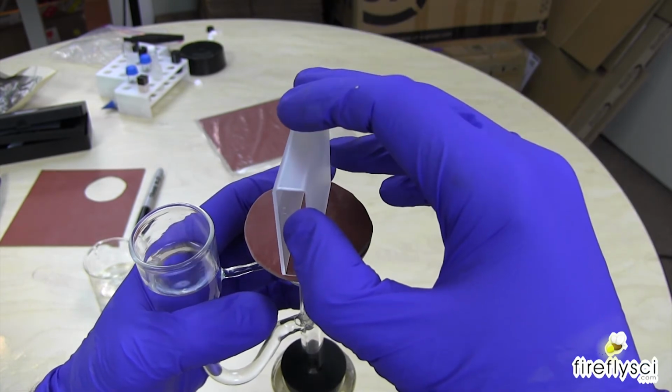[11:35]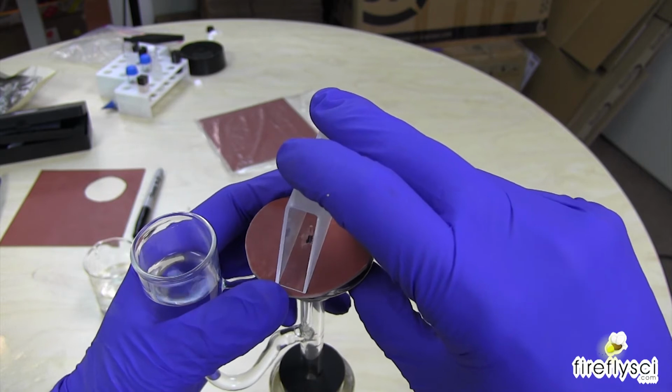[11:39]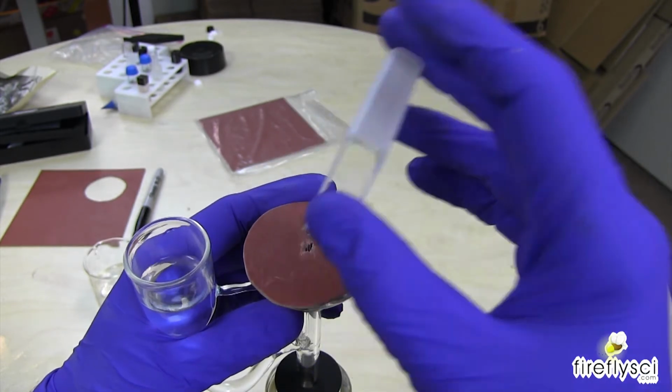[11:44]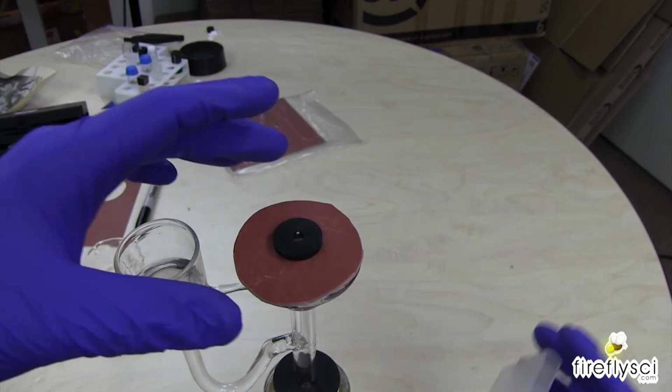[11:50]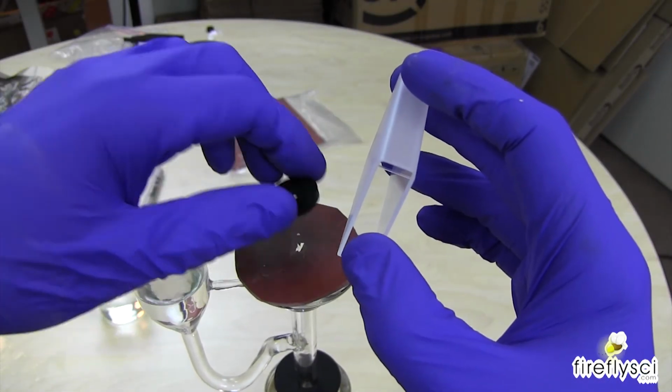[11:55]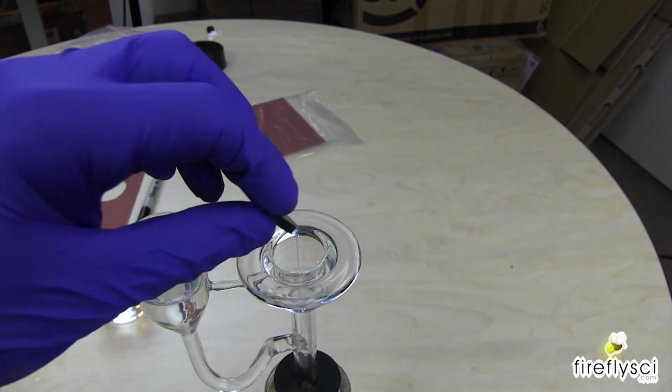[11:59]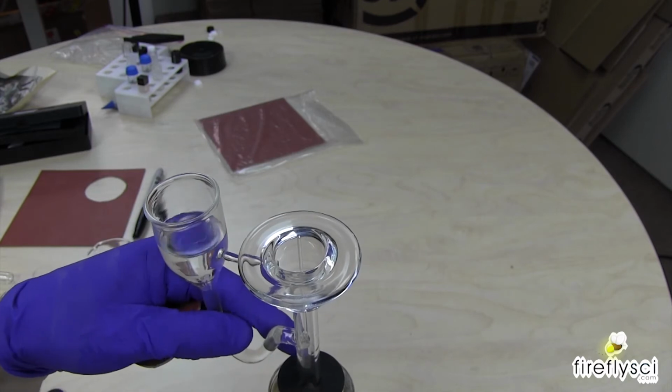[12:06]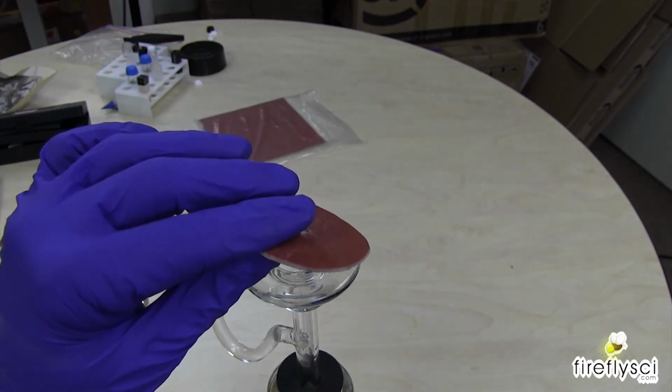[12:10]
So there's a number of different things that I'm thinking could be unfolding here. Is it the gasket? Is it making a tight enough seal here? Is it the tubulation is too small in the middle? Something else. No, that's not going to work. That does change the sound of it, interestingly enough. No, that's not going to work. It wants to work, but it's not working. It's seriously thinking about working.
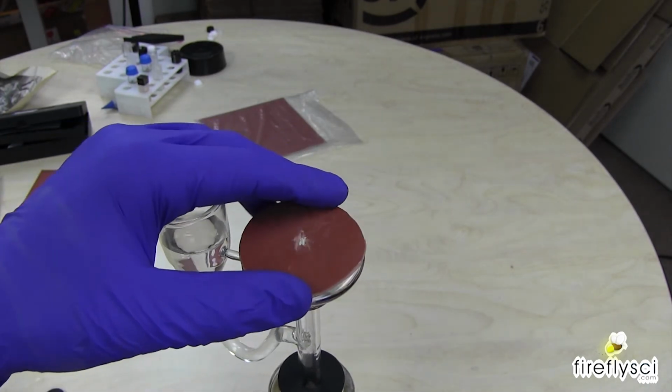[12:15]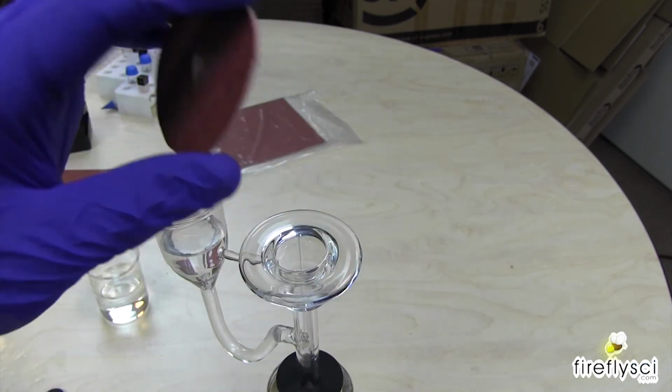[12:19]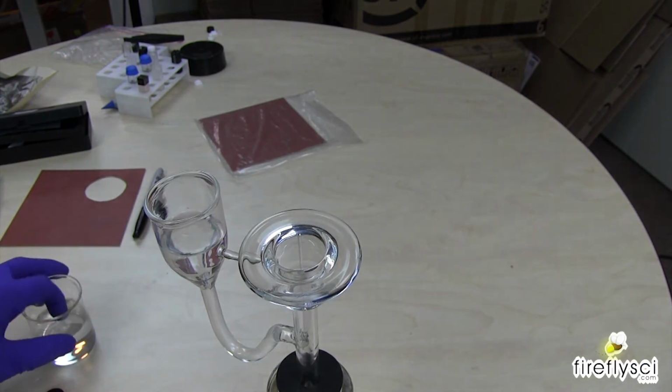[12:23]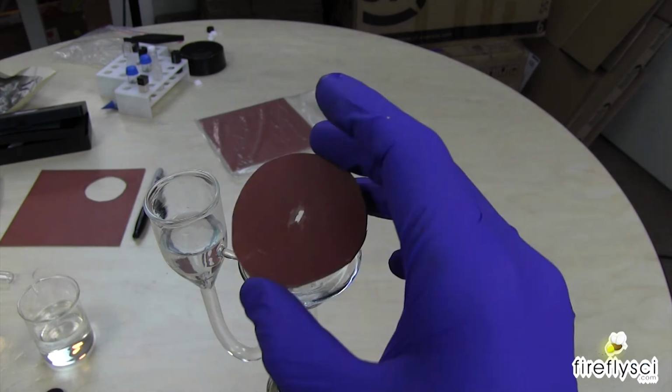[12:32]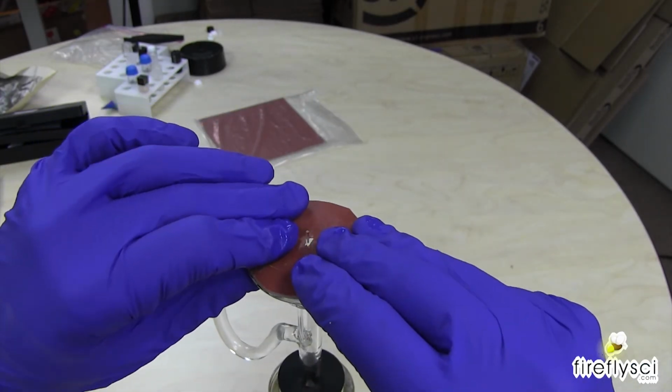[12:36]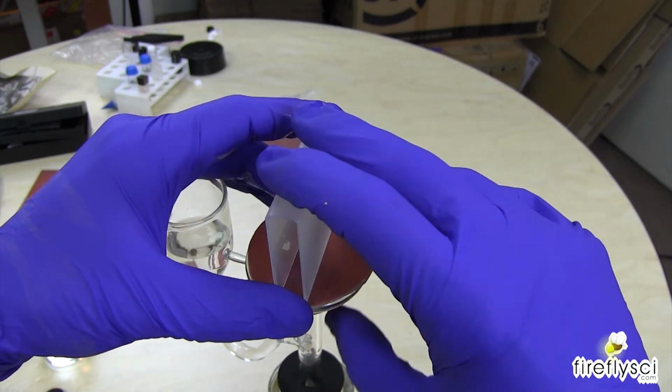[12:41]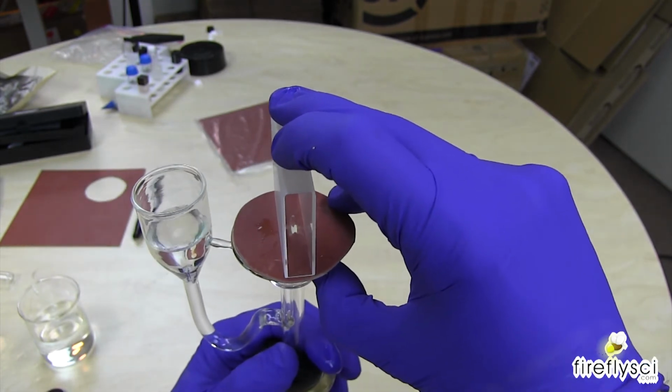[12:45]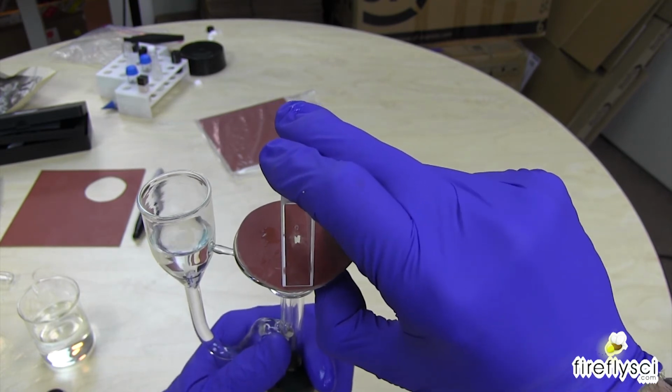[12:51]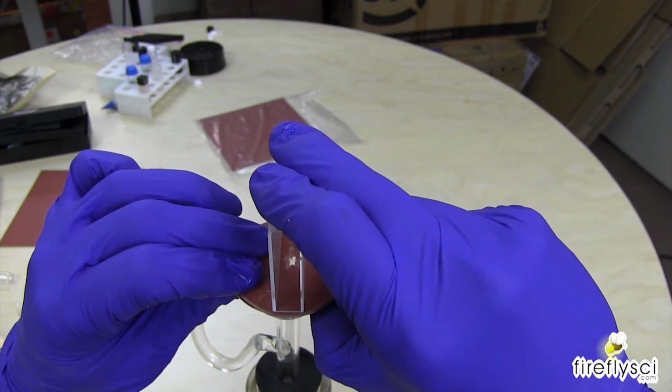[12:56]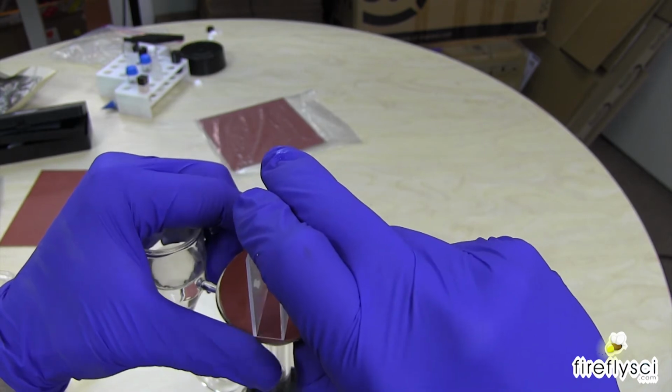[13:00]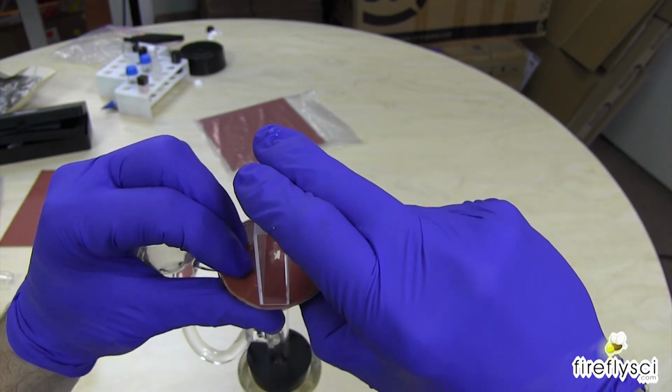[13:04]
Now, I'm not sure if this piece of rubber is the problem. You know what? I'm going to try to wet this disc and see if that's going to help us at all, to make a tighter seal here. All right, back on. I got nothing coming out. So I'm trying to figure out where is the sticking point here. Still nothing. I'm trying to put some pressure here.
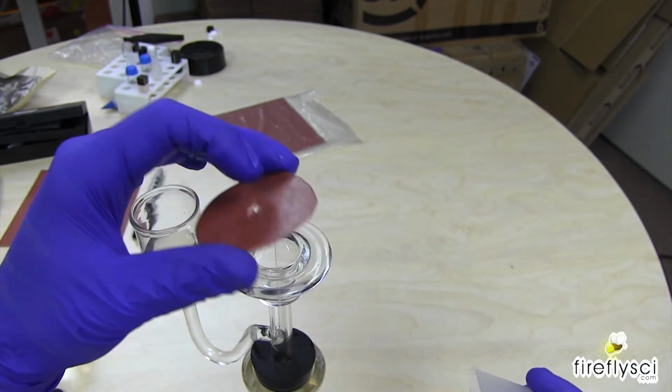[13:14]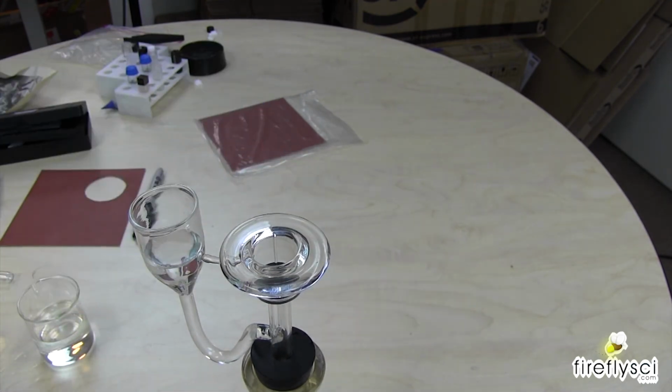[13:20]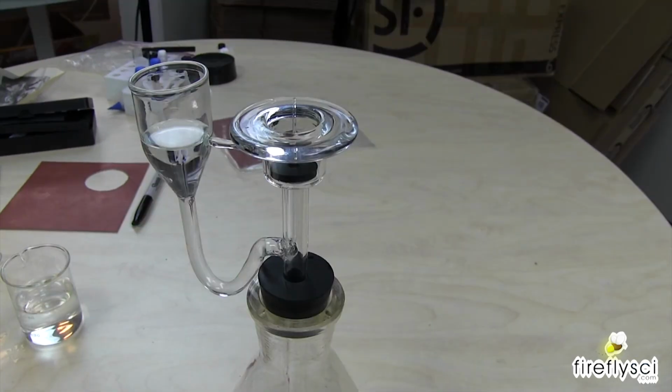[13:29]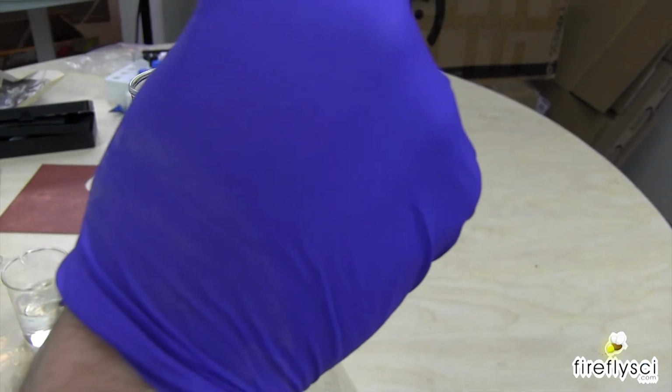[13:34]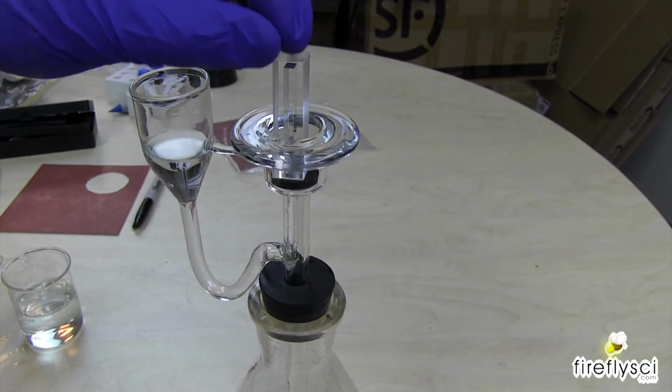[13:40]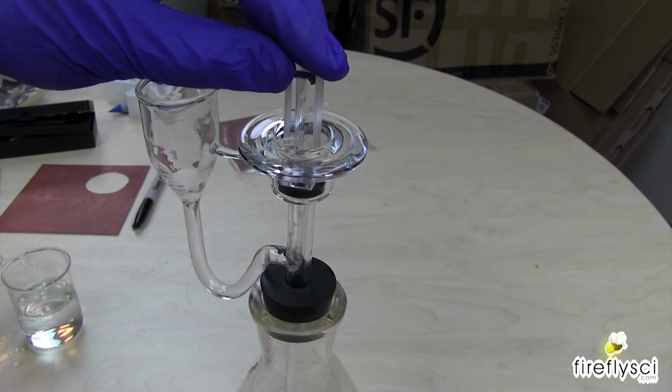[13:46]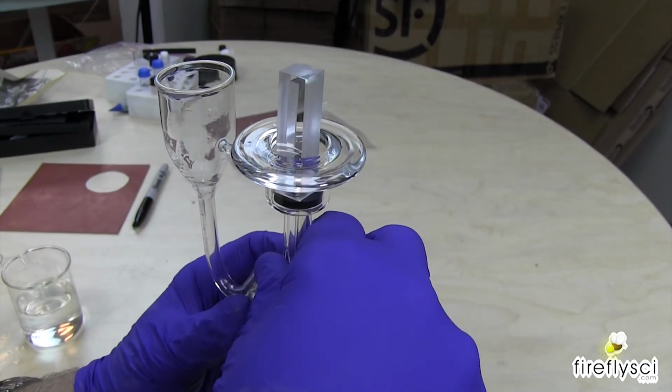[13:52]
We're going to take a step back. I'm going to throw this gasket in there and we're going to try washing a 10 millimeter cuvette. I have one of those right here, and we'll see if we can get some pressure with that. I'm just going to readjust the camera. We'll be right back. And we're back. Here we are. And I have a 10 millimeter cuvette. Putting it in, and that is, it's kind of working now. Now where's the problem with this?
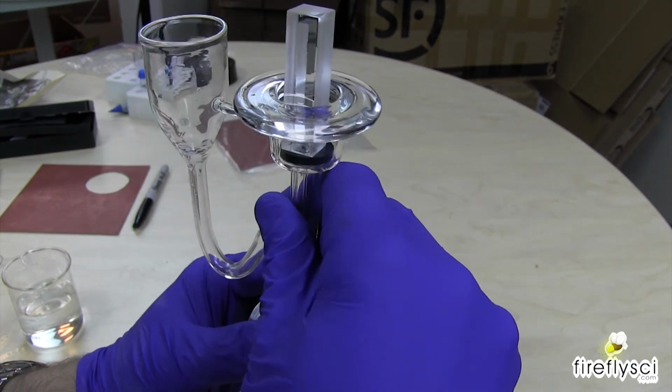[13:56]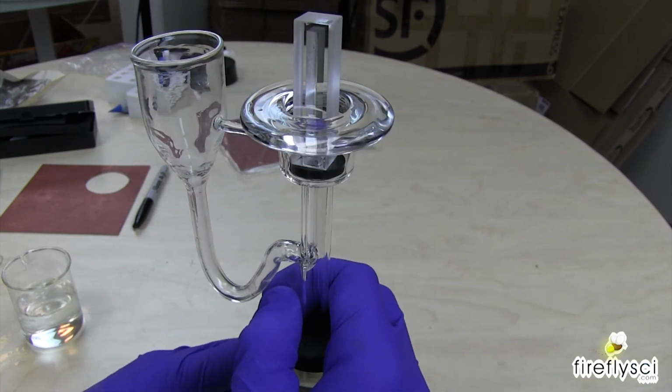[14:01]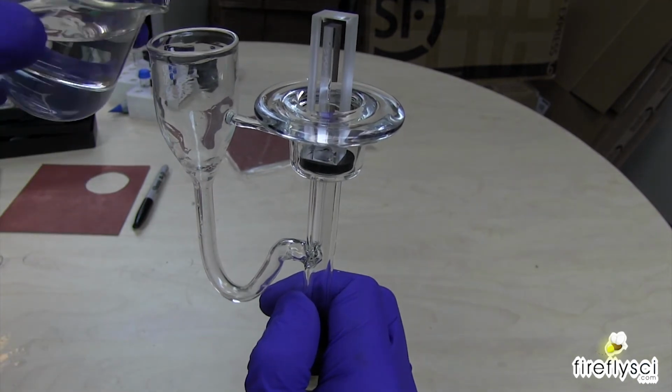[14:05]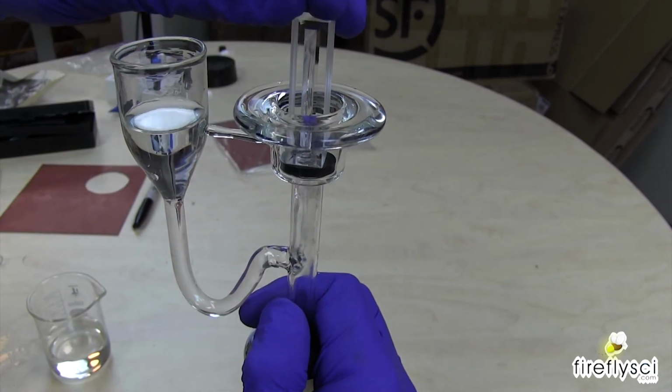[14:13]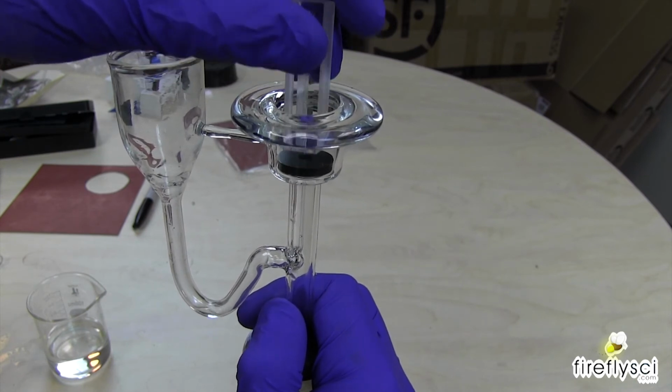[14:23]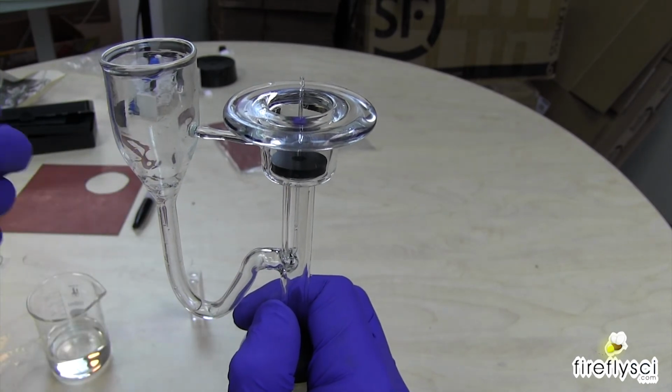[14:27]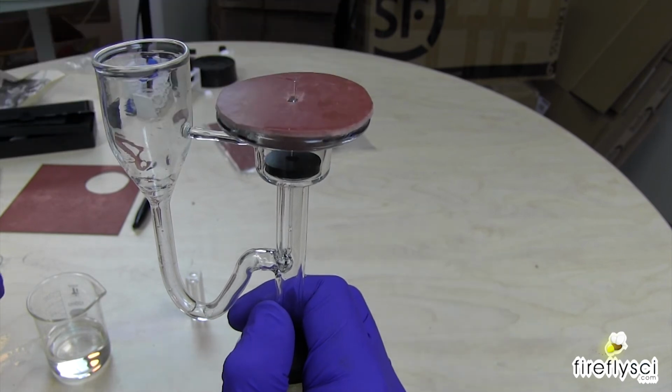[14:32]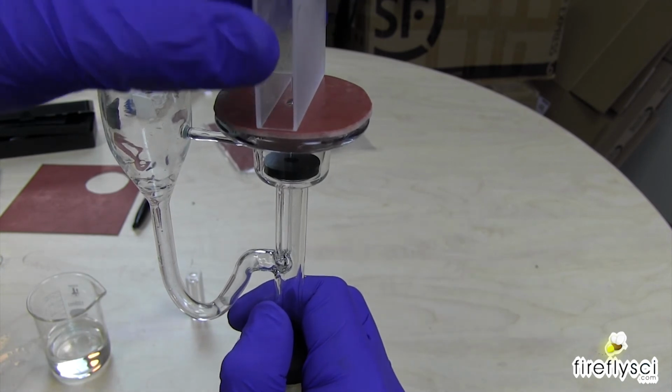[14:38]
So this, let's try putting some more sample in a clean solution. All right, 10 millimeter is working. That's sweet. That's awesome. Got a really good suction on it too. Now the question becomes, why are the large light path cells not working? Put on my big disc there. The only thing I think of is that this rubber is not making a tight enough seal, in which case I have to get a new gasket here.
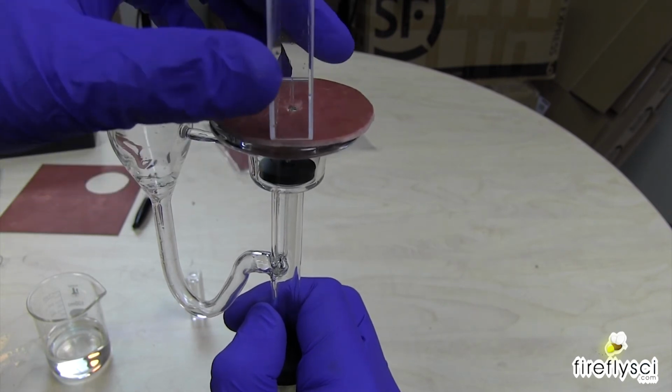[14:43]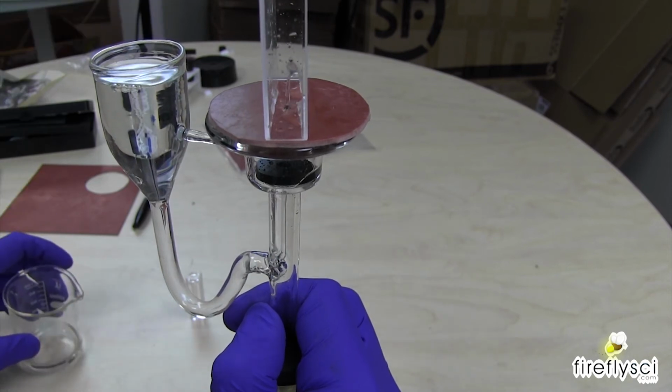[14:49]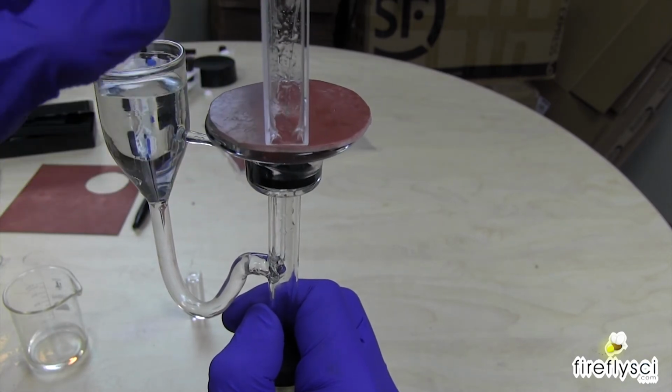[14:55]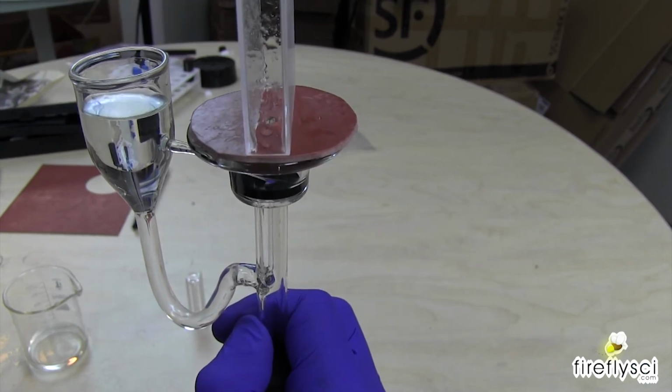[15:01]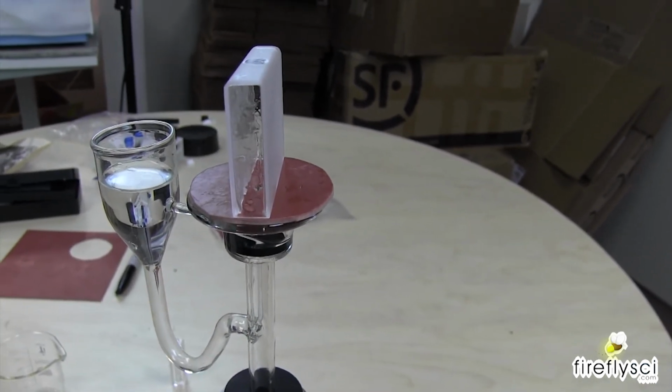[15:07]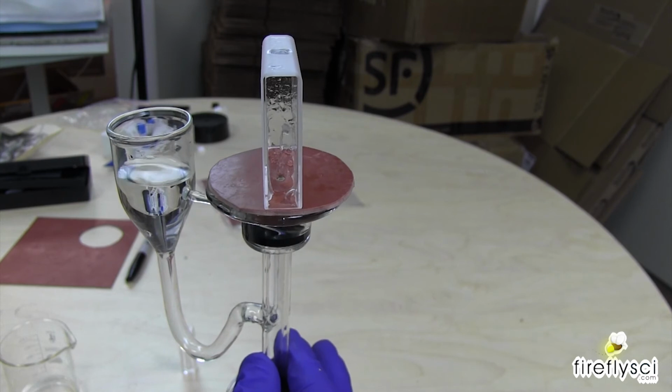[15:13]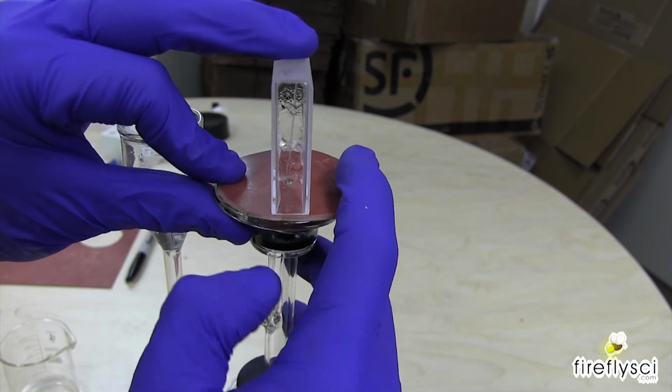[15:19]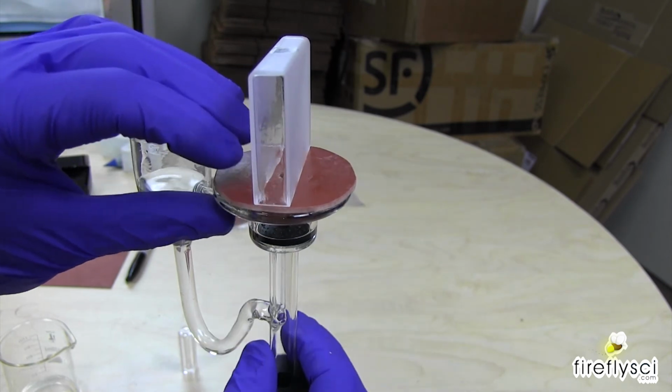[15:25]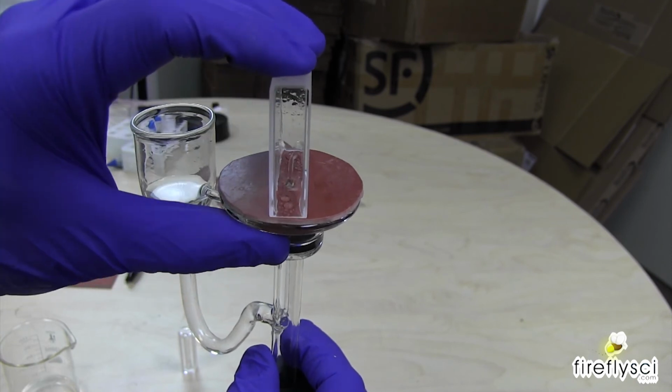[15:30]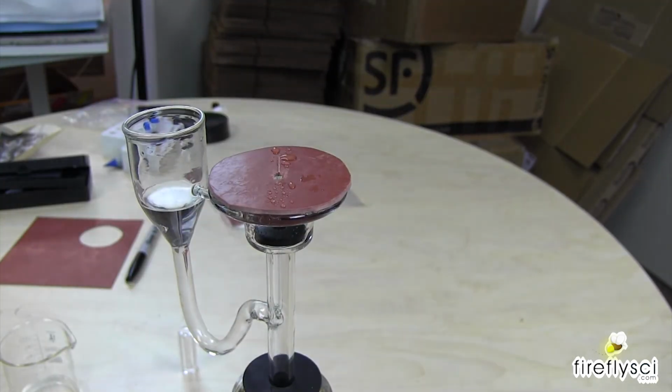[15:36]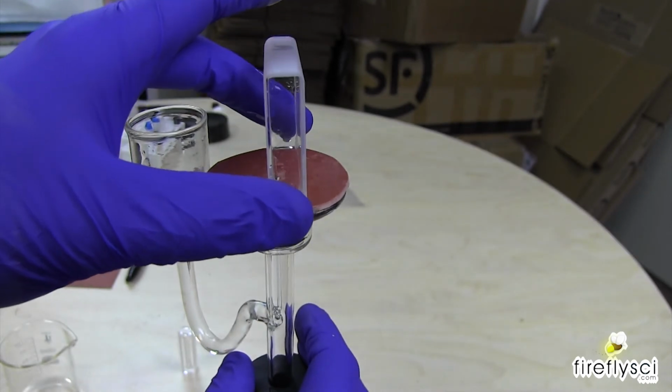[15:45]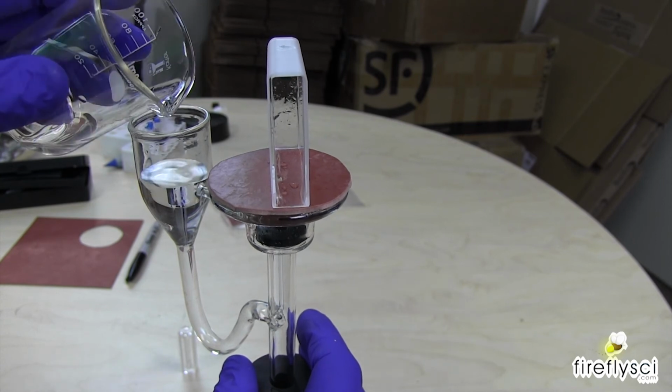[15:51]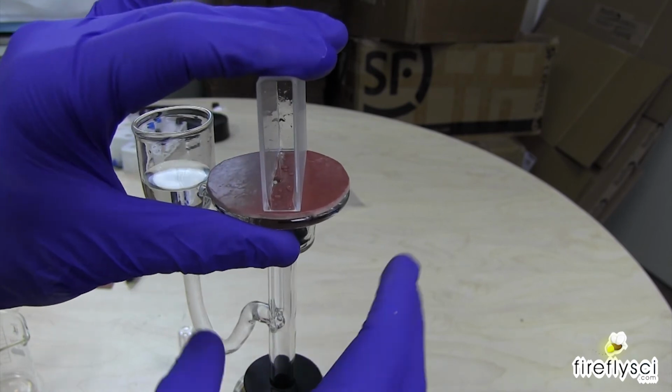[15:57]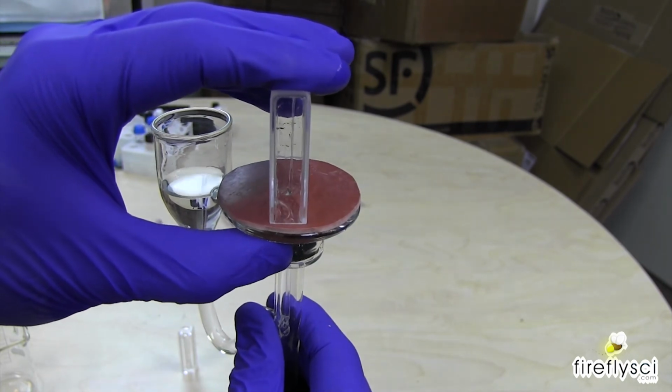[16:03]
Yeah, it's there a little bit, but not quite good enough. It's a type of rubber. It really wants to work, but it doesn't work. I'm gonna try wetting the edges of the cuvette a little bit. Let's see if that's gonna help us out a little bit here. Solution. Nothing. We got nothing going on right now. Oh, here we go. Here we go. I'm getting some washing going on here.
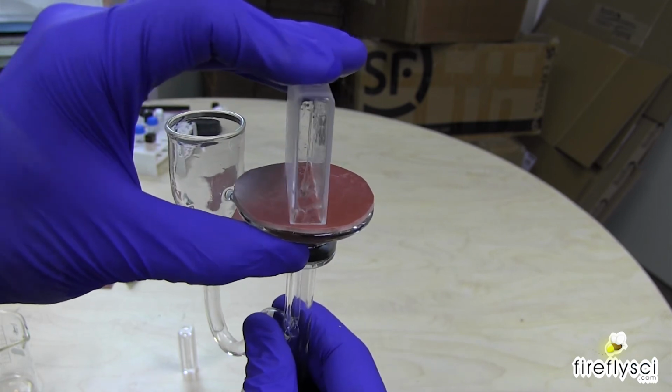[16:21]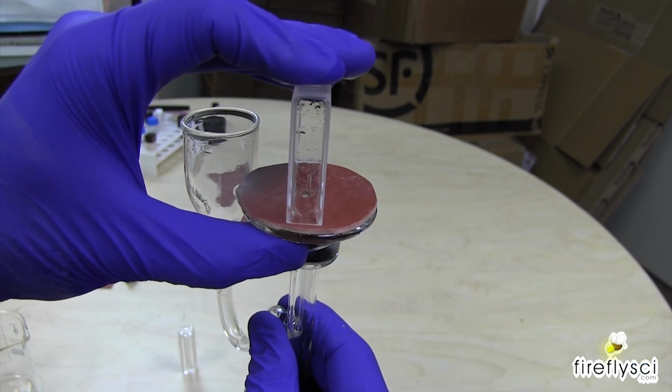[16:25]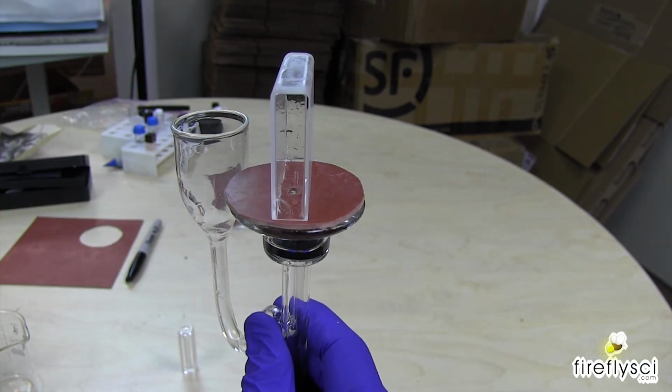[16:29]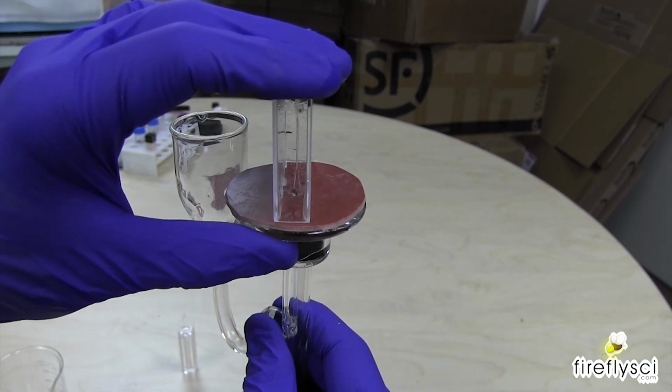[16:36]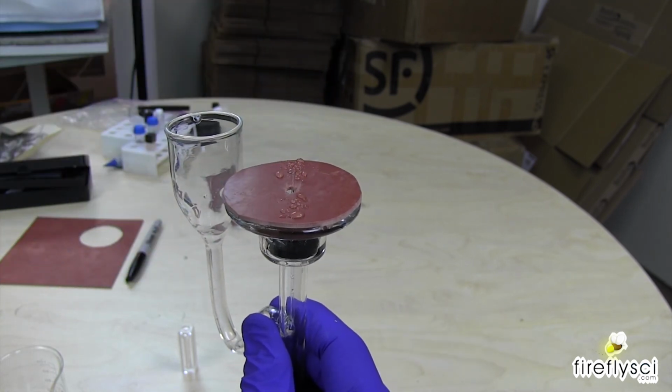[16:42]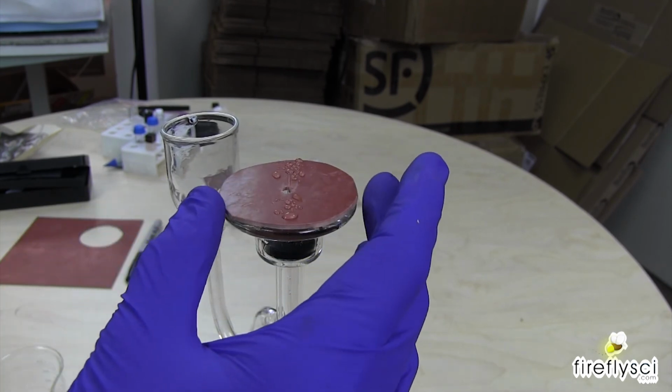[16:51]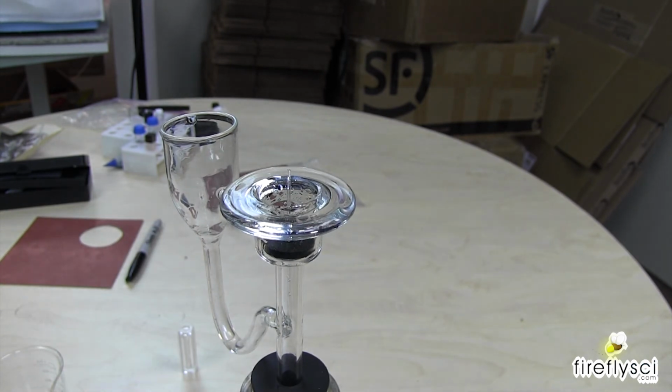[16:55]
Let's see. Alright, so it works. It's not perfect, and I'm thinking it has to do with this rubber gasket that I have here. I am going to look into getting a different type of rubber for this, because I think that's the sticking point here. It takes some tweaking to get this to sit right and to actually work. But for the 10mm one, it works great. So I am going to go ahead and order a different rubber for this, a softer rubber. This one seems to be too hard and doesn't have enough give to it.
And we'll record that next step in the process and keep you guys updated as we move along with this project.